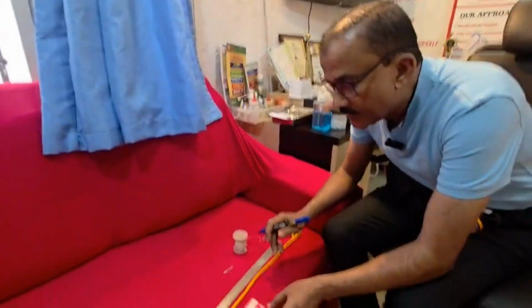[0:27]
Stephen ENT Innovation. In this very nice video, I'm going to talk about the double balloon catheter by Dr. Stephen's Innovation. I will just show you how to make it, then I'll talk about how to use it.
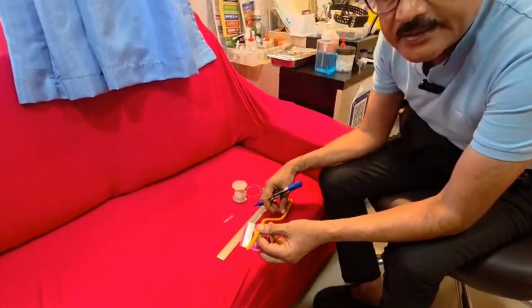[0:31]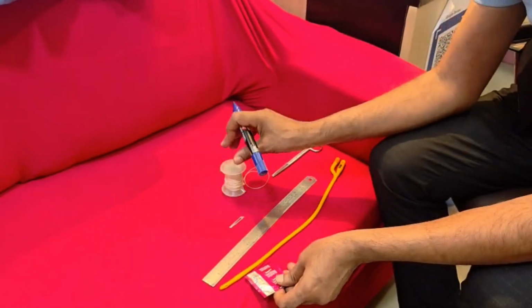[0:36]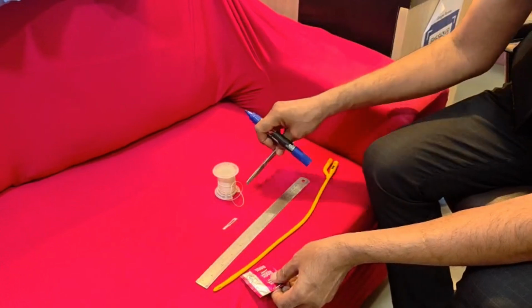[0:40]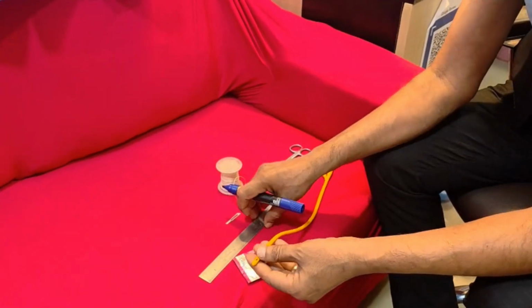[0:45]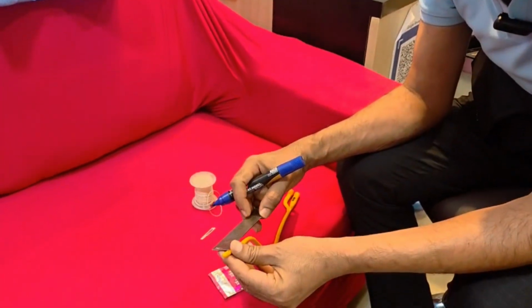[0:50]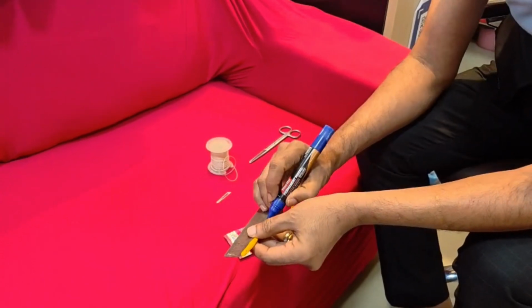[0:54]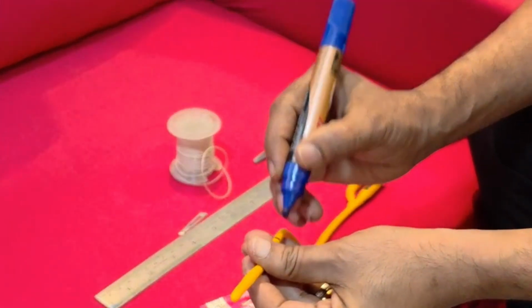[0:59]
To start, we need a condom, a Foley catheter, a scale, one blade, a silk tie for the condom balloon, and one scissor to cut it. This marker is with me. The human nose is around 8 centimeters in an adult. So I keep a distance of 8 centimeters on the scale and mark it at 8 centimeters. That is the first thing to do.
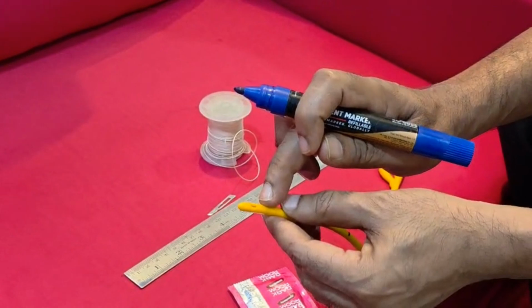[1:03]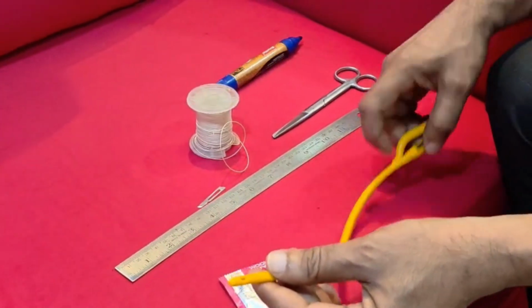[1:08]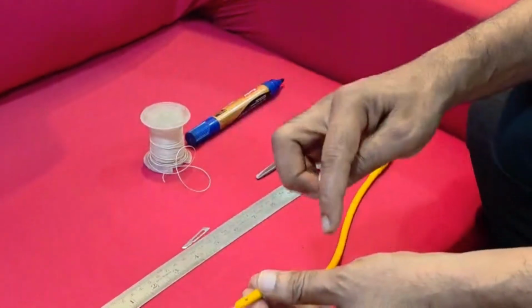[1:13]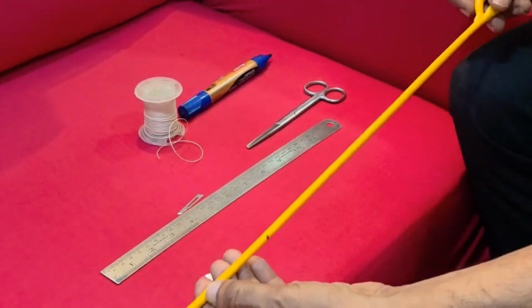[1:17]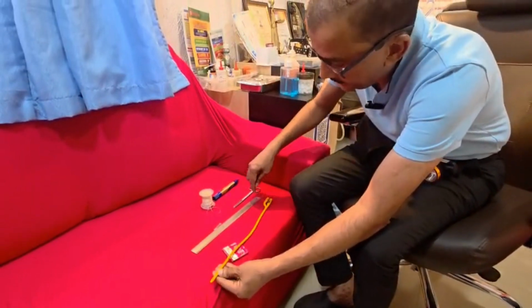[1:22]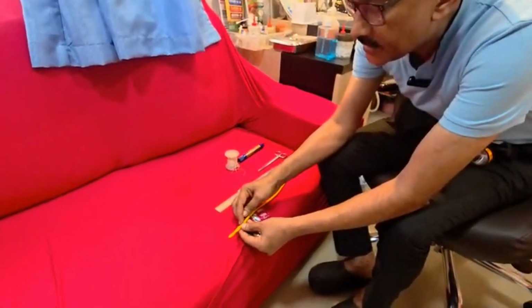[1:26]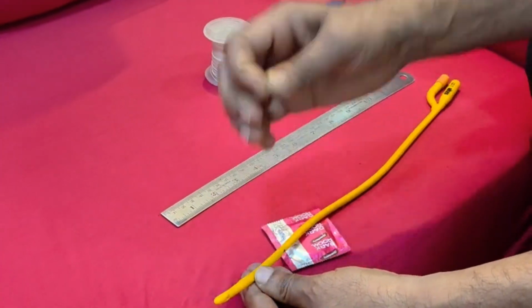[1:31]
Second, mark this area, the fenestra, where urine opens and goes out of the lumen here. With this marking, we calculate, holding the Foley catheter, the lumen which you are going to balloon up. This lumen is the air sealed valve. You should open it somewhere here. If you open it here, the entire catheter will get damaged.
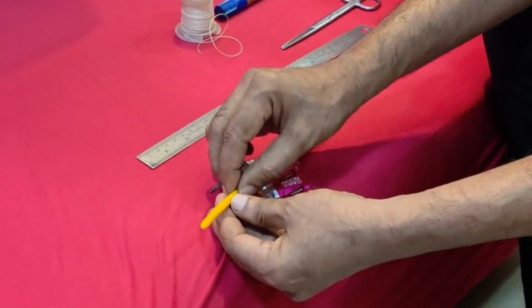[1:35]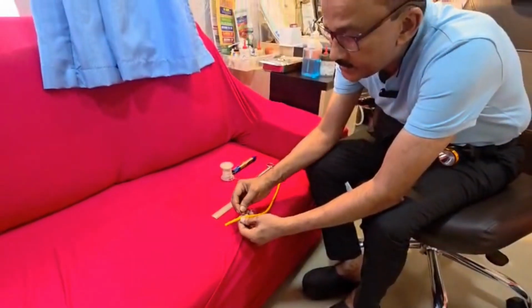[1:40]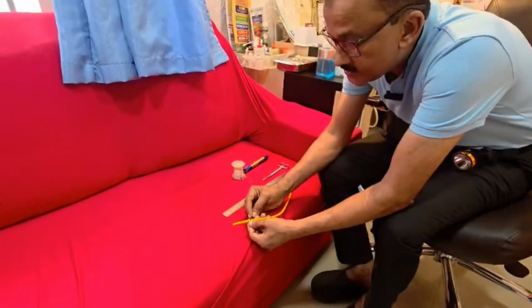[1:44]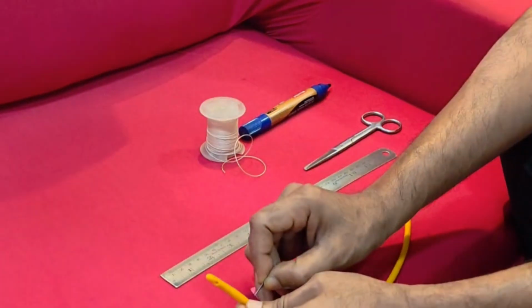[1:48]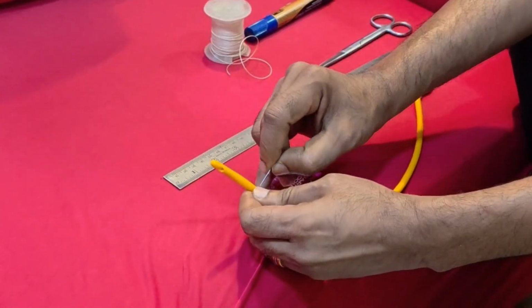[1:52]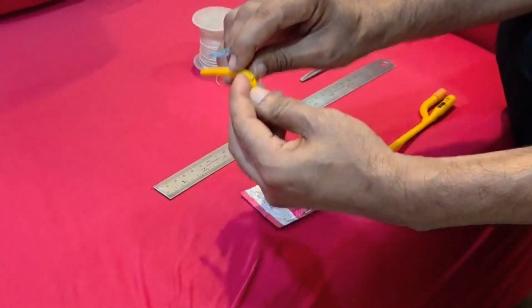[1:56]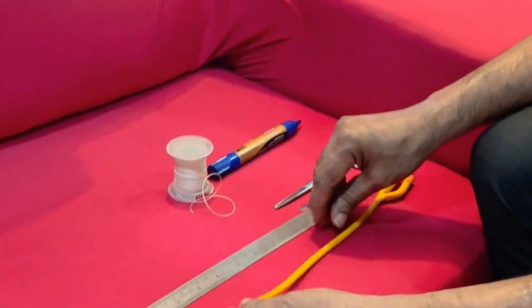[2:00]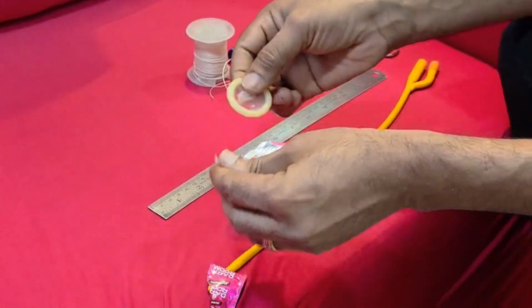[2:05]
Opposite to that, the urine drainage pipe has to be opened for the purpose of air getting leaked into the second balloon. I've already cut it. Make a small opening there. See, that lumen is opened here. You leave it open. And then the first thing is to take a condom and open it.
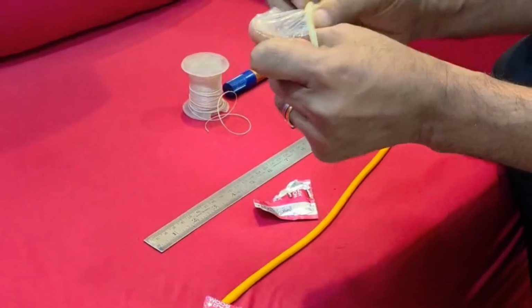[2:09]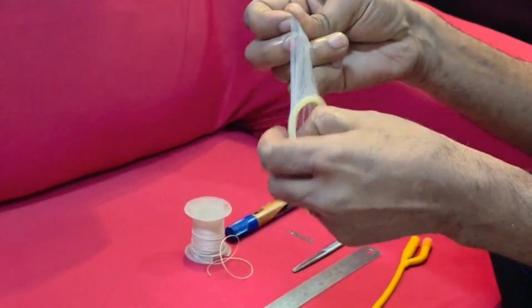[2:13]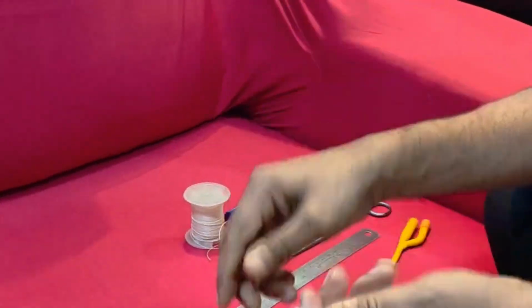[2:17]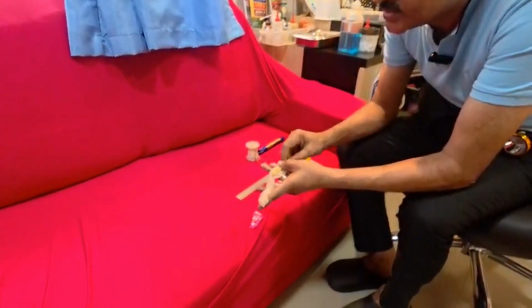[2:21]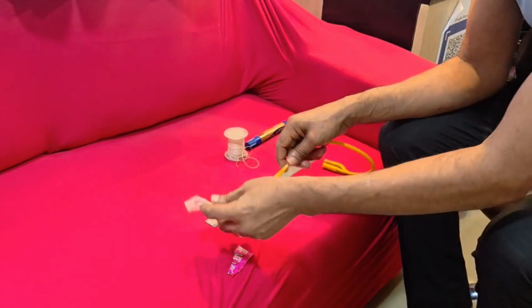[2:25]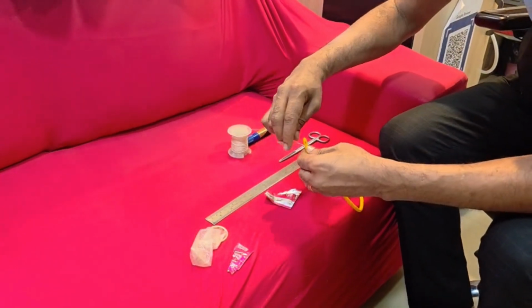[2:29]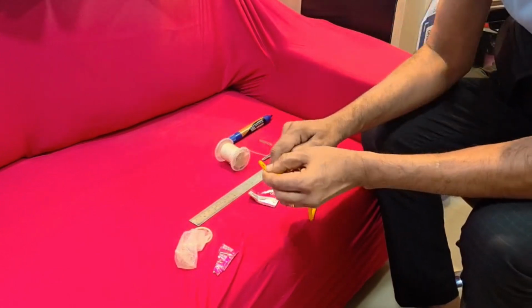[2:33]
If you're doing it in sterile condition, you use surgical gloves to make it. But I'm making it here in an OPD setup to show how to make it. That's all it is. You don't have to use this catheter. It is only for demo purposes. First thing is to tie this lumen. I use a tonsillar tie, and you have to tie this tightly.
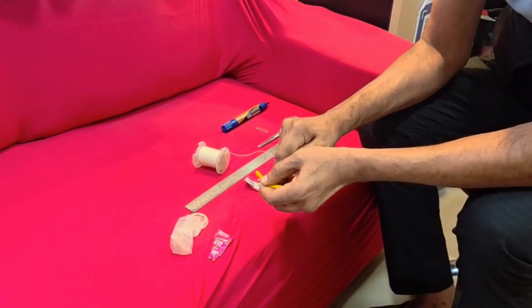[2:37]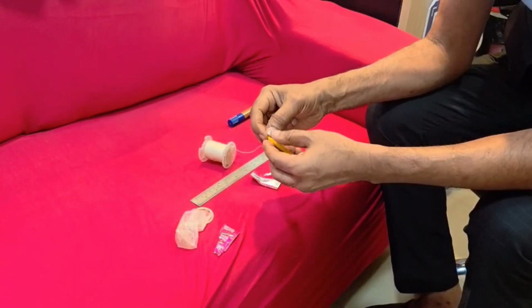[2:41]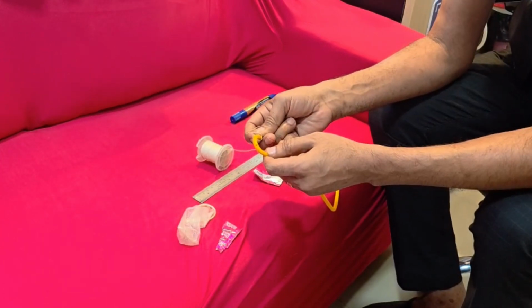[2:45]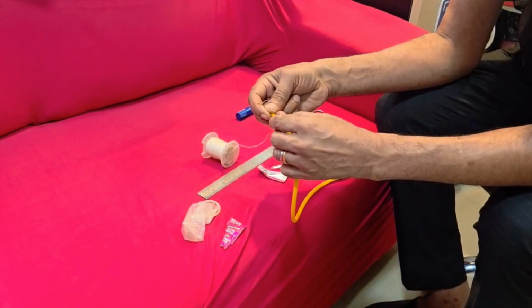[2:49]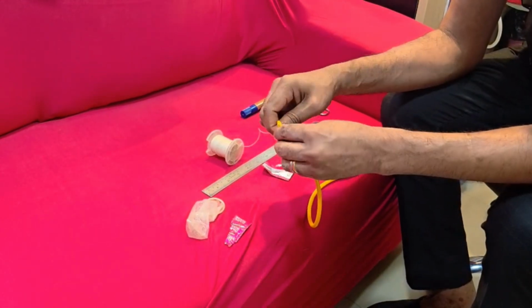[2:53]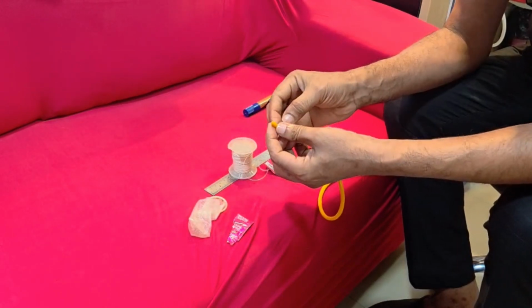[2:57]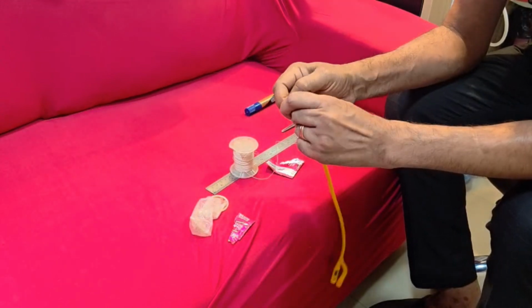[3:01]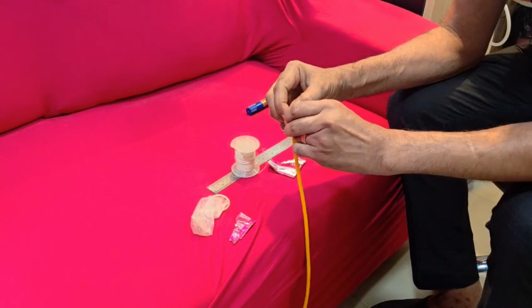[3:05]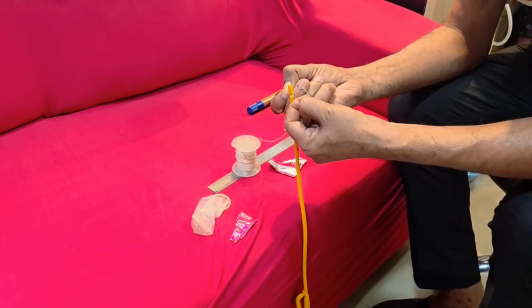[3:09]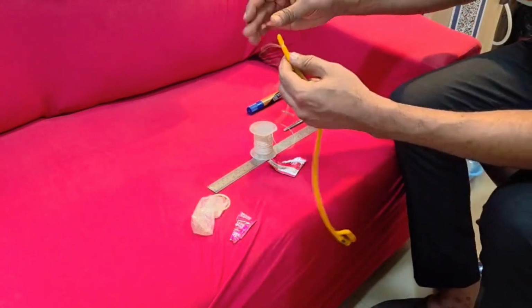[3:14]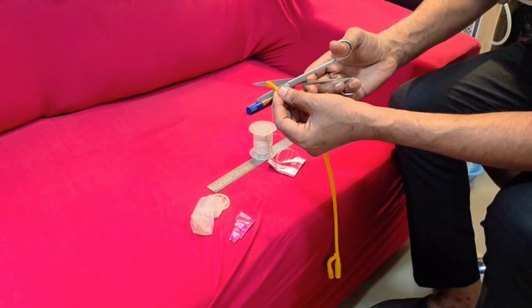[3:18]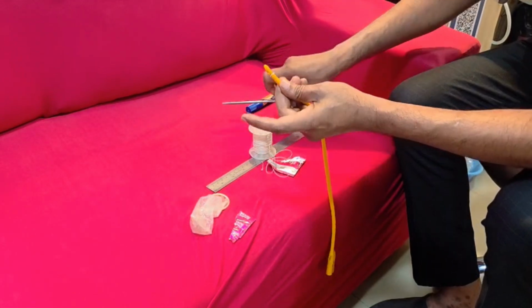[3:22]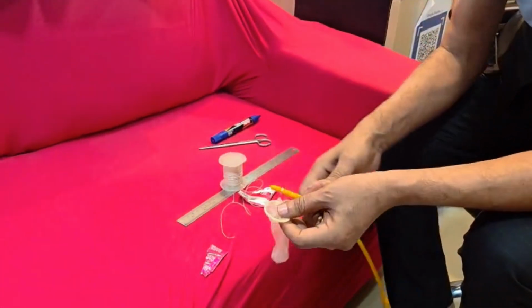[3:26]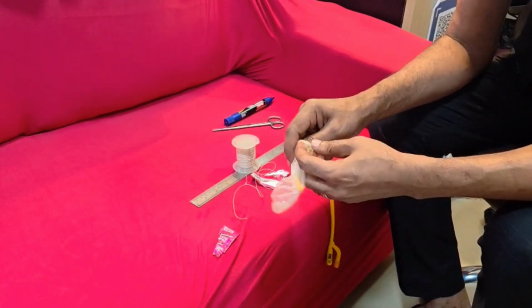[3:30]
When you tie, this lumen gets opened here where I opened. You understand? Then if you insert air, air will leak here into the balloon. The balloon I'll show you soon, how it is coming with the condom. Once you seal it, insert the catheter into the balloon until it reaches the tip.
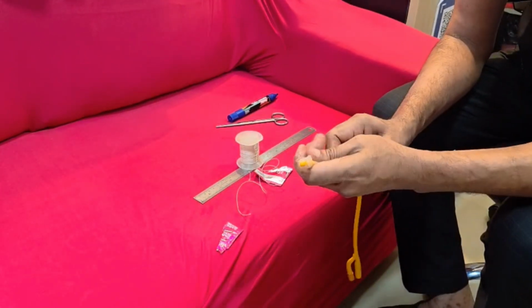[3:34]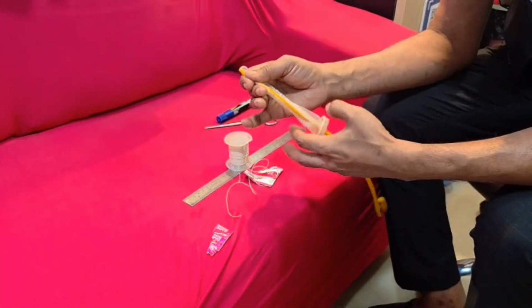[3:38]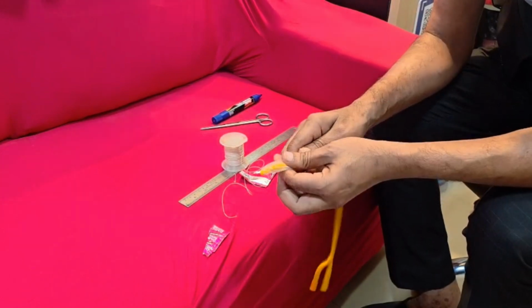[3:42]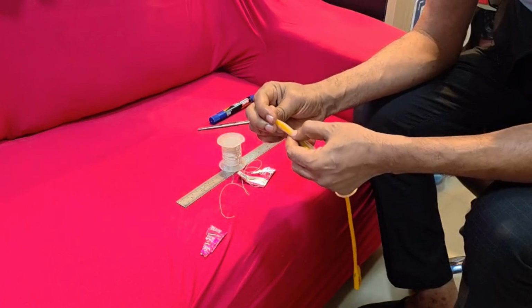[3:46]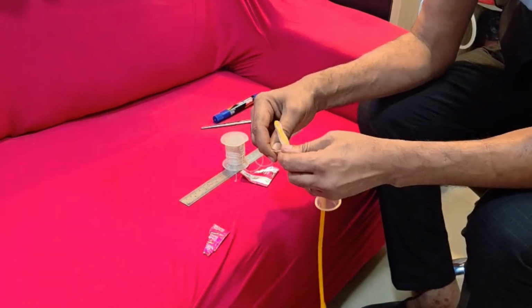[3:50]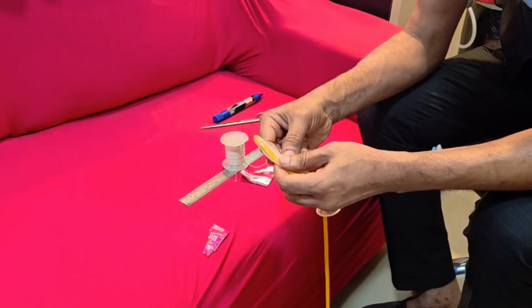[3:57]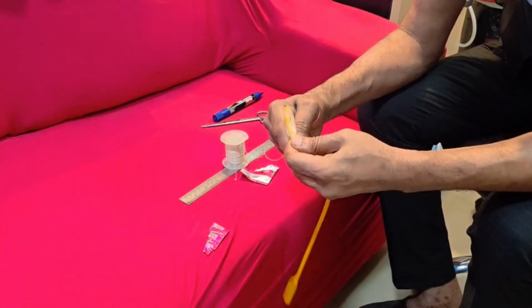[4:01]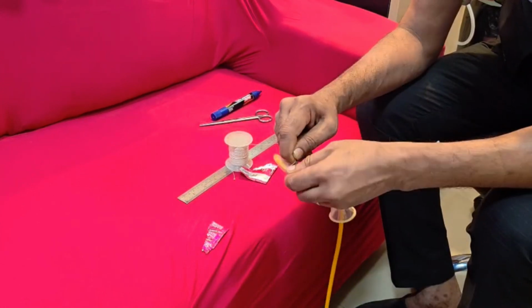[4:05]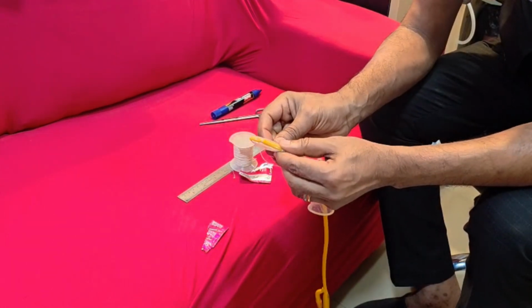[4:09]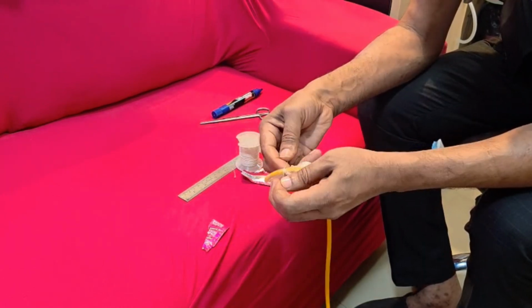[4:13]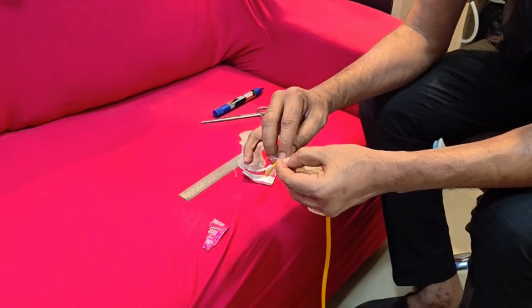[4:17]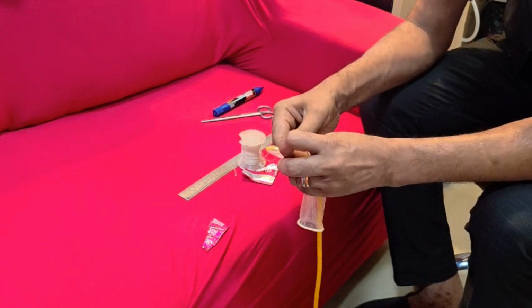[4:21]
Once it reaches the tip, allow the condom balloon to glide on the catheter. Exactly where this balloon ends, the tie is given very firmly, but not in a very constrictive manner. The lumen should not close. It is only firmly tied to the catheter. It should not be too tight. If you do it too tight, you will have obstruction of the balloon where air cannot be blown out. So we will soon know the result once I finish the catheter making.
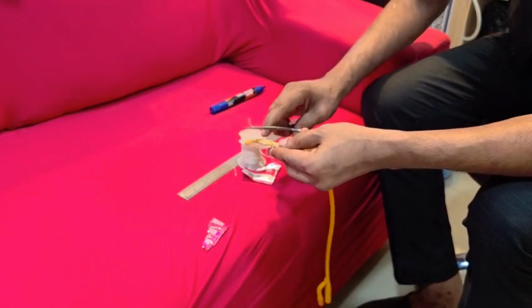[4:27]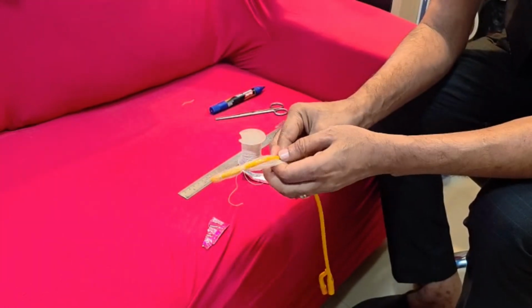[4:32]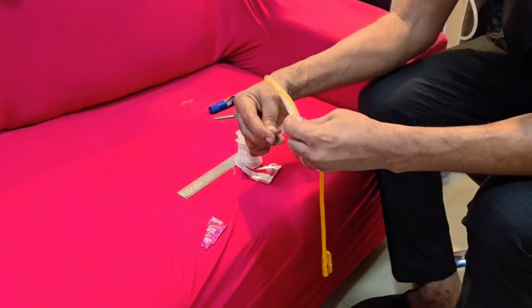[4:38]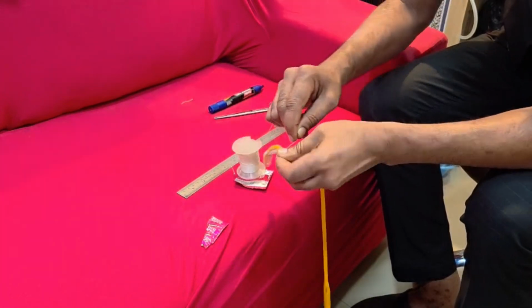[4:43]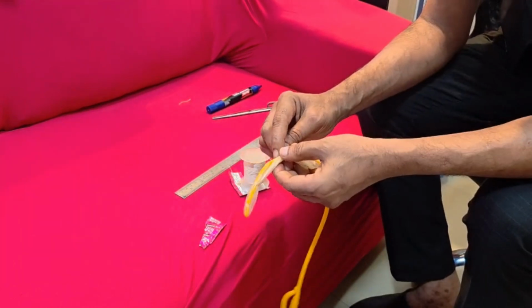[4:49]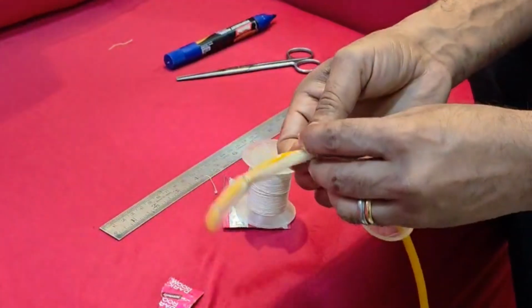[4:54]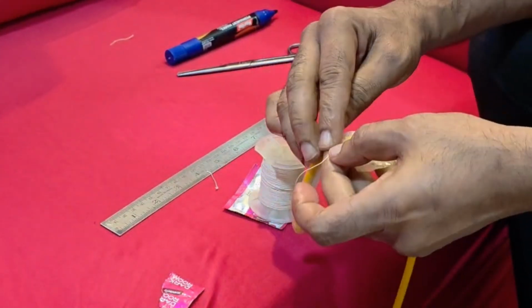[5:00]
This tie is over, and then trim the thread. And at the mark which you made, you have to put one tie. This also firmly to hold the catheter. It should not be too firm or too constrictive to close the lumen of the catheter. The tie should be very firm, but it should not be too tight. Once you complete,
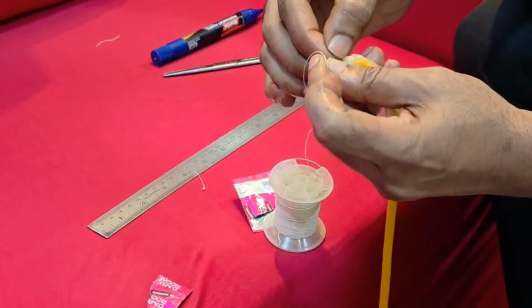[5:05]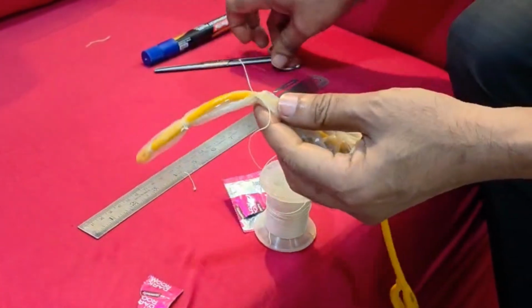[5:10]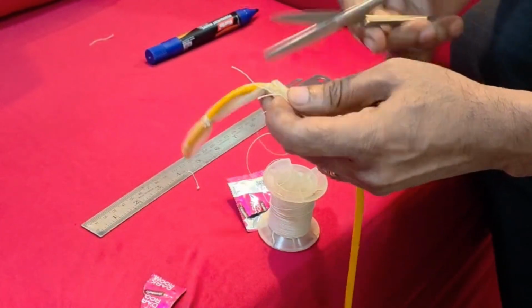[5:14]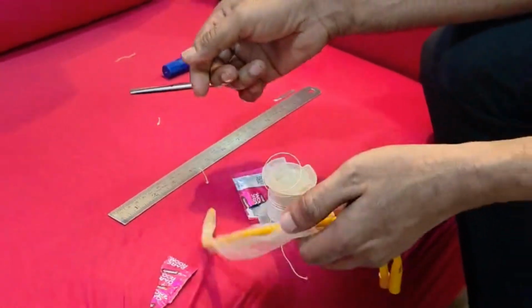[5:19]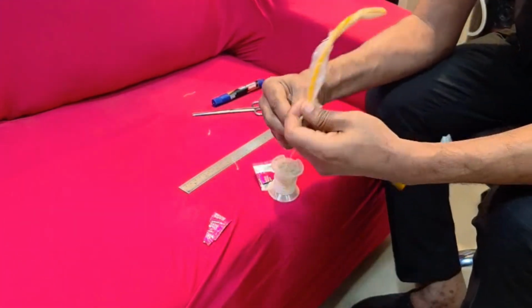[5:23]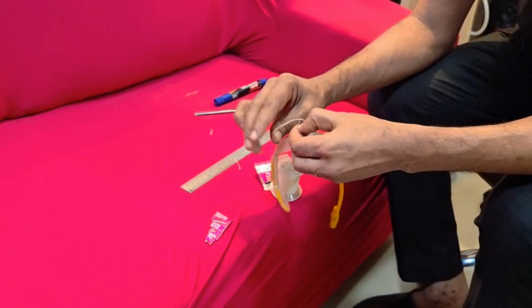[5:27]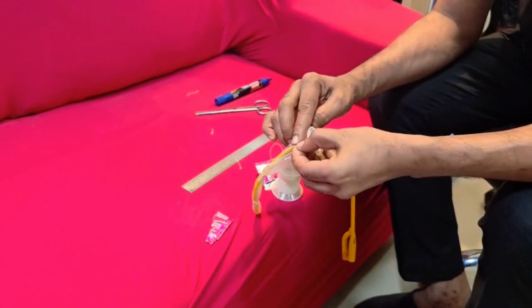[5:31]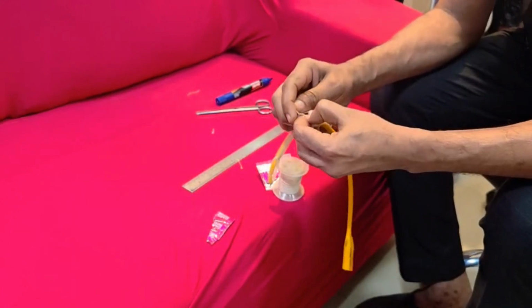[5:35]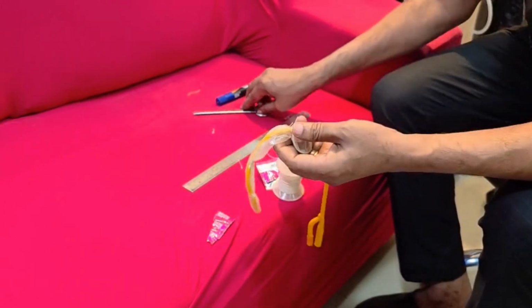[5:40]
just for cosmetic purposes, this thing can be tied around the end so that the condom balloon sleekly fits the catheter. Otherwise it will look ugly. That's all. My catheter is ready.
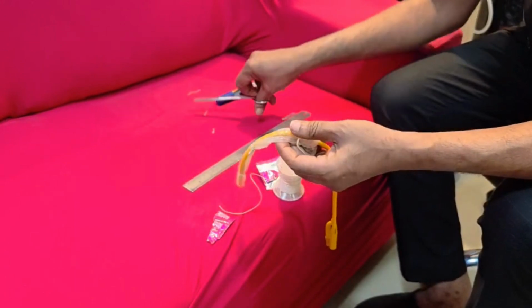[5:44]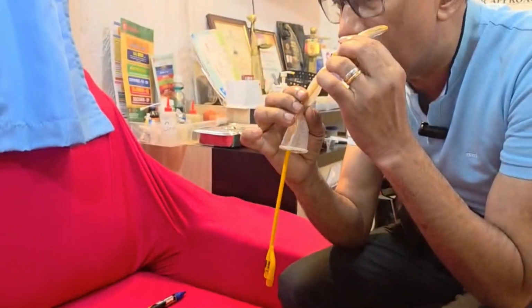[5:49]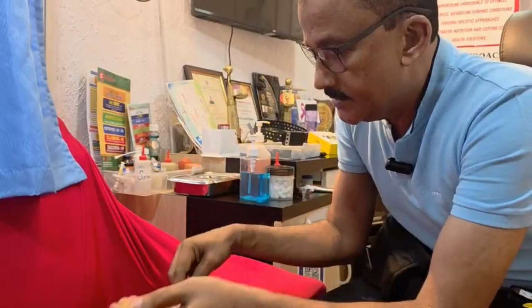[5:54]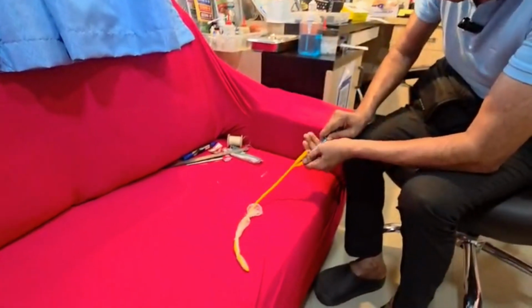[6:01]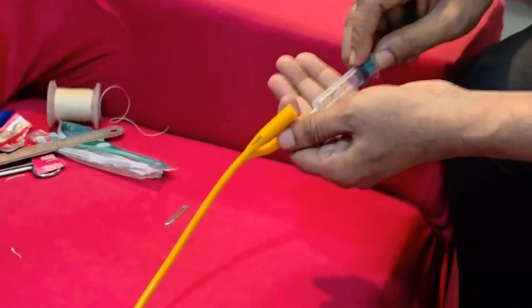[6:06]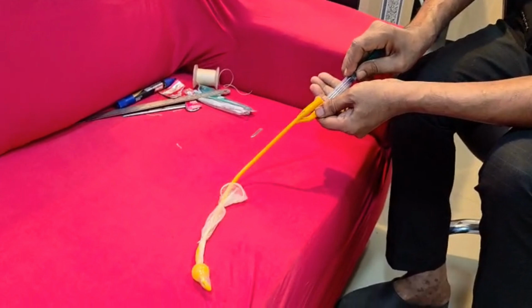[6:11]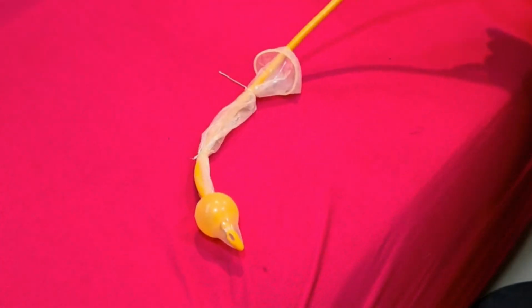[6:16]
Trial. This is the catheter. You insert it into the floor of the nose and go to the posterior nasopharynx. It lies like this. Syringe. Now you inject air or water. You get the first balloon opened. However much you want, you can inject into the postnasal space. This is how it comes.
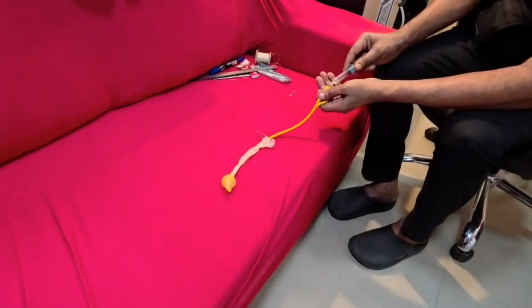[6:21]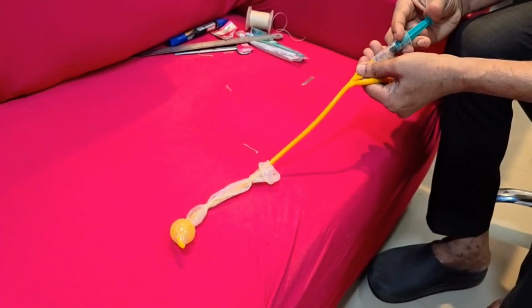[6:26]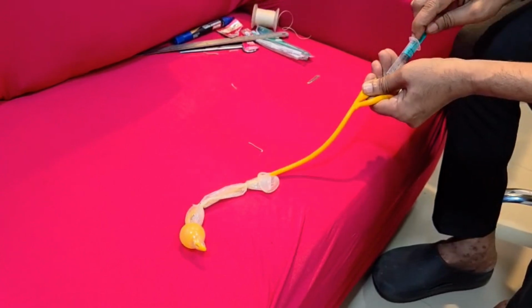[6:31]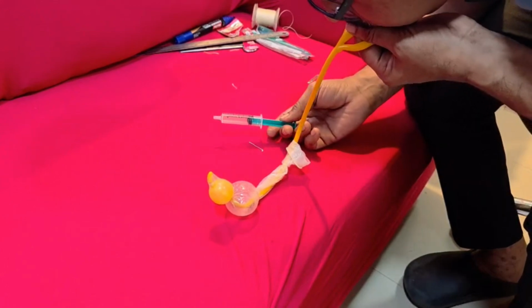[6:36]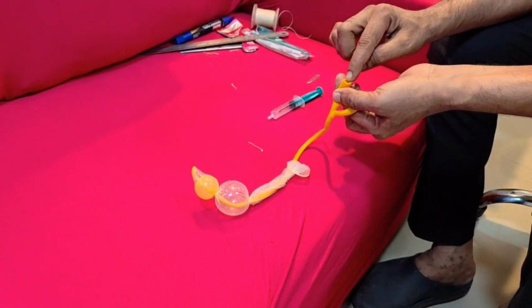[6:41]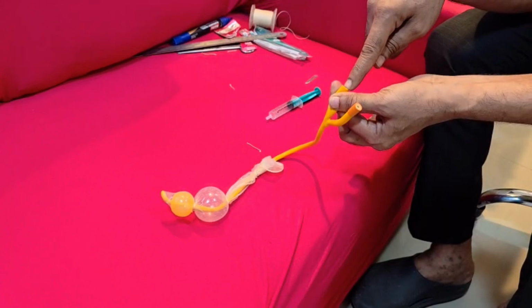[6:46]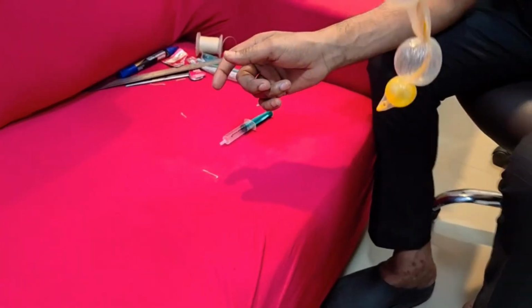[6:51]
Second, this catheter opens because I have not removed the air seal valve and put it for this. The air seal valve is here. The same thing from a different catheter, we can put it here so that you will have control over the air blow. This is the double balloon catheter.